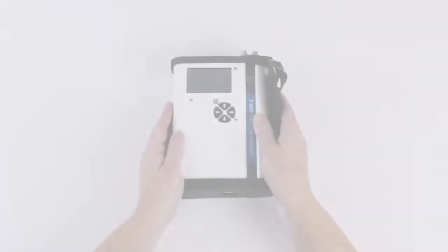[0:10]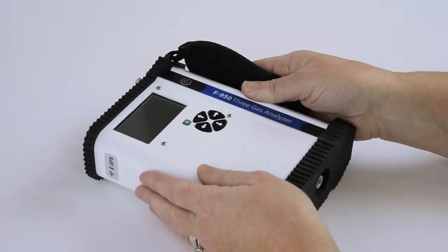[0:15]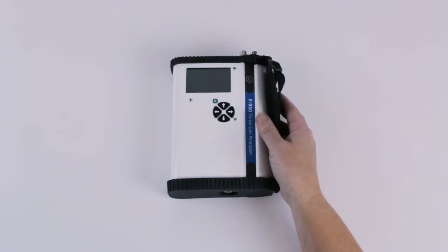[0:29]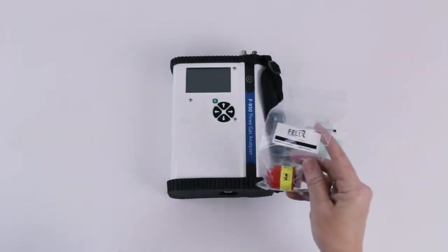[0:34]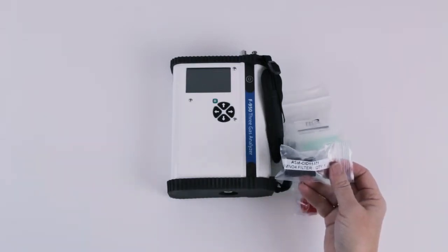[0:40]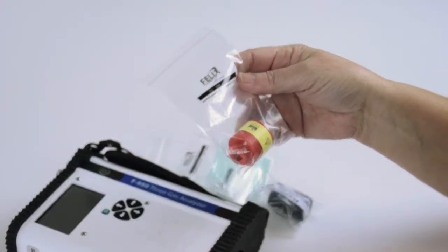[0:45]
The following is an instructional video for using the DIY Do-It-Yourself Annual Maintenance Kit for the F-920 Check It, the F-940 Store It, the F-950 3-gas analyzer, and the F-960 Ripen It. The kit will include a calibrated ethylene sensor, a calibrated oxygen sensor, and a KMnO4 filter. For the F-920 Check It, it will only include a calibrated oxygen sensor.
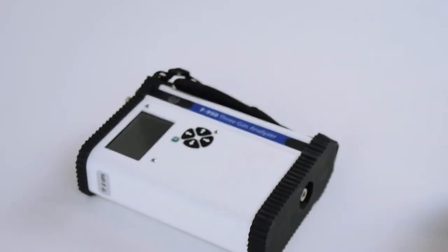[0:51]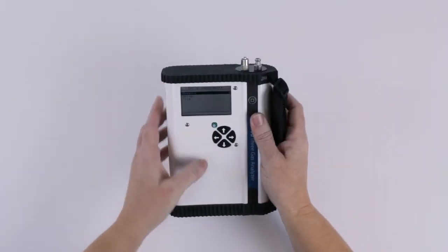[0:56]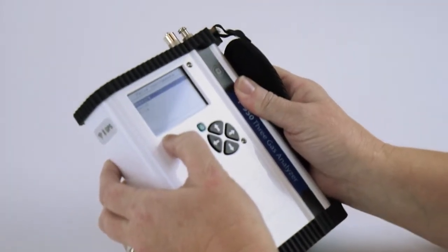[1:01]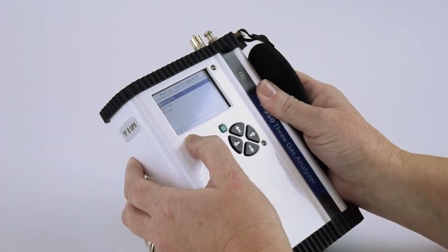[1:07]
To begin, power on the instrument and determine the firmware version. This is visible in the lower left-hand corner of your screen. To use the DIY kit, you need a firmware version of 1.9.6.3 or higher. If you do not have a firmware version that is 1.9.6.3 or higher, follow the instructions in your manual to update your firmware before you begin this process.
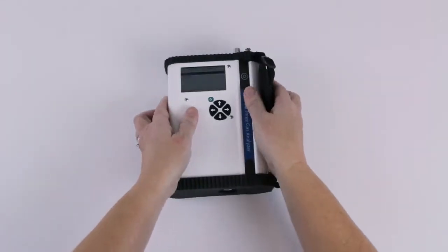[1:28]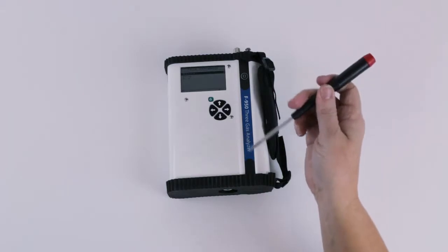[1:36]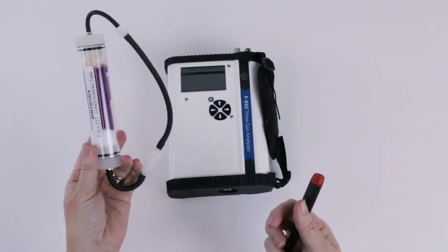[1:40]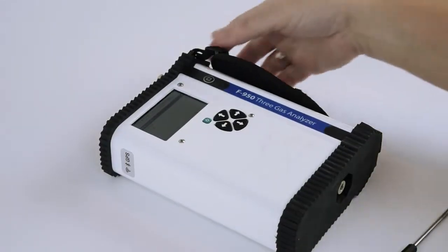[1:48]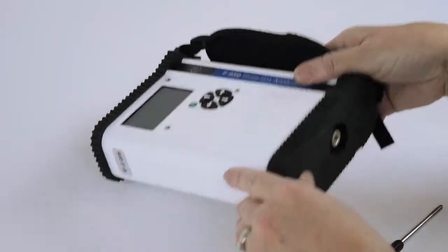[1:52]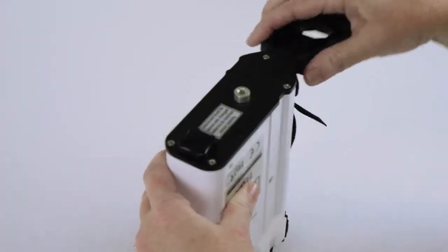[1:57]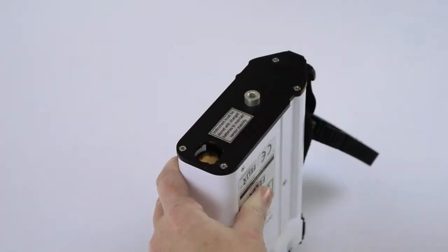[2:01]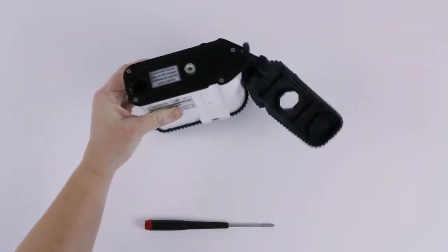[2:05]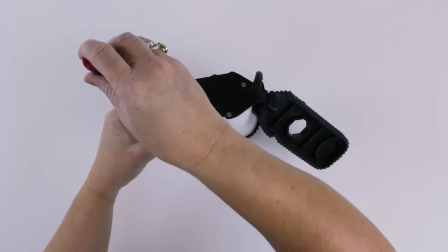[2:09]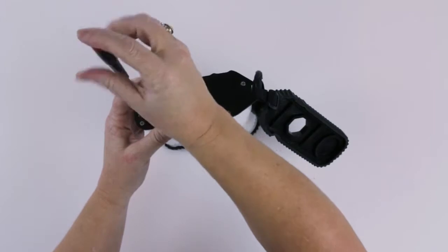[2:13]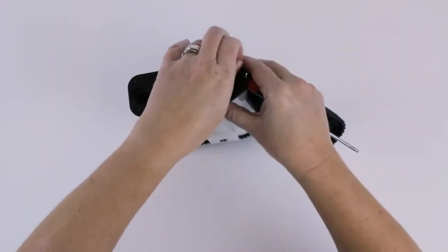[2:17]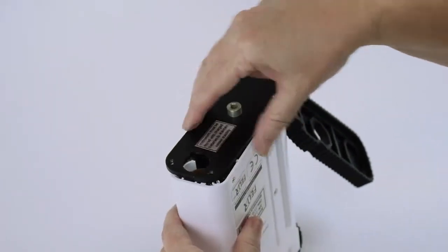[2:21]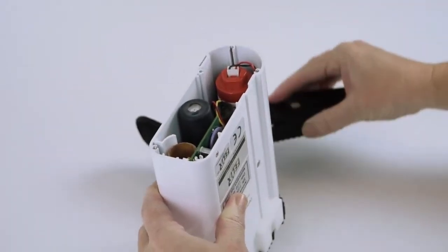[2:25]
All you will need for the installation of the maintenance kit is a Phillips head screwdriver and the external conditioning tube filled with potassium permanganate that came with your accessories when you first purchased the instrument. Turn off the instrument. Remove the rubber bottom cover. Remove the battery cap and the batteries. Use your screwdriver to remove the 4 screws securing the bottom plate. Remove the bottom plate. It's okay to keep it connected to the hand strap.
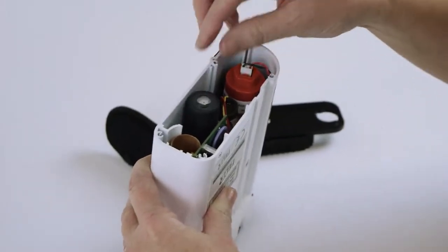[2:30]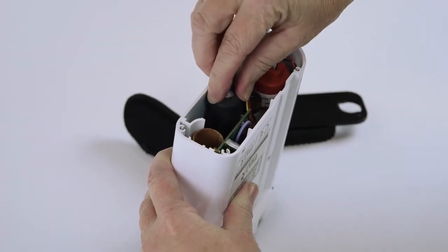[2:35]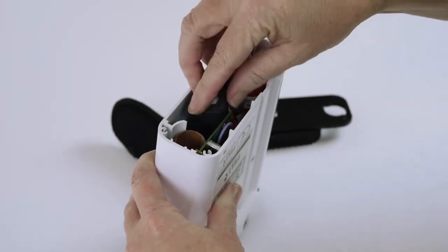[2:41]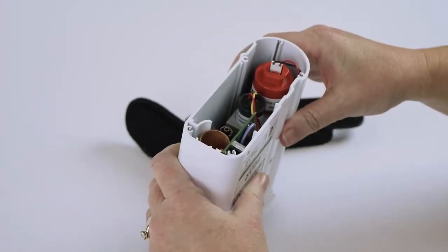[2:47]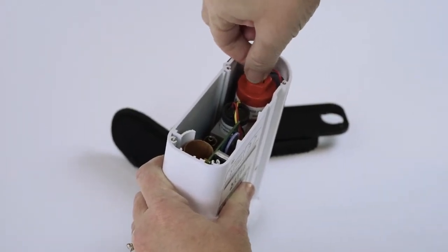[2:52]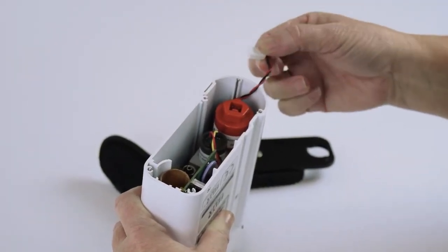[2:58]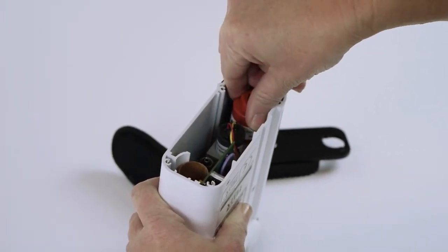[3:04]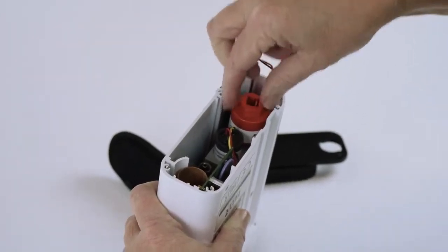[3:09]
The first operation is to remove the KMnO4 filter. An F-920 will not include this piece. Turn the filter counterclockwise and set it aside. The next step is to remove the oxygen sensor. Use the white bracket to disengage the cable and lift it out. Do not use the cables to pull the bracket out. With your fingers, turn the sensor counterclockwise to unscrew from the instrument.
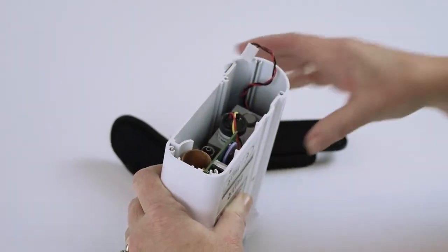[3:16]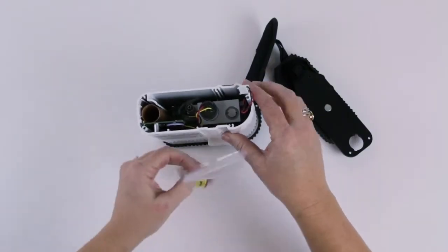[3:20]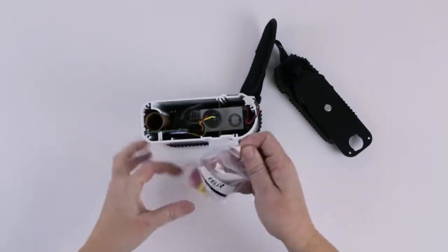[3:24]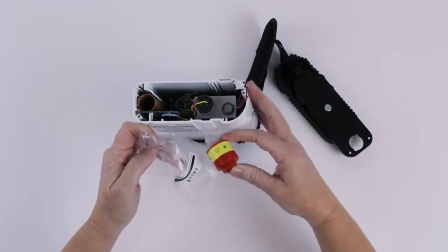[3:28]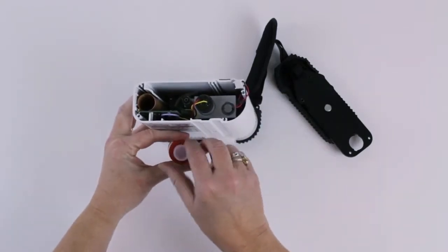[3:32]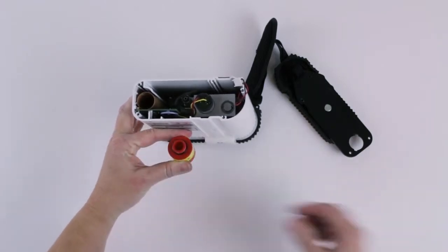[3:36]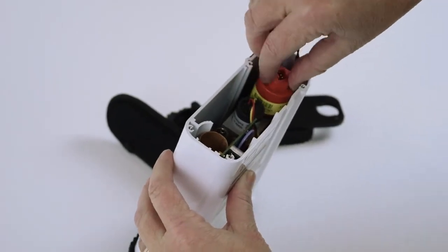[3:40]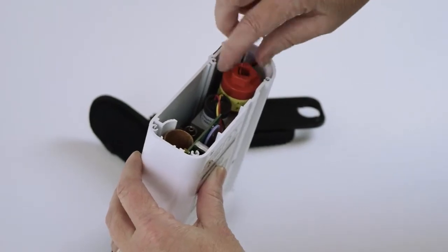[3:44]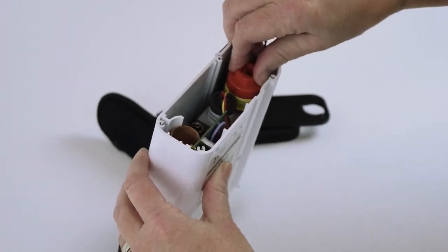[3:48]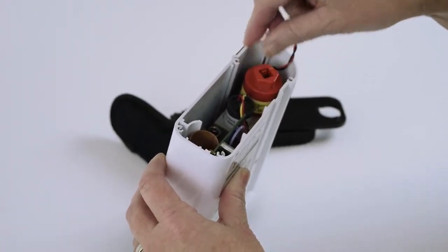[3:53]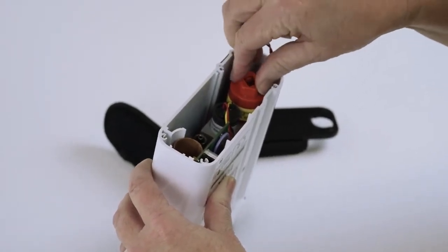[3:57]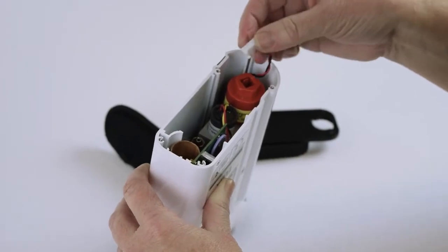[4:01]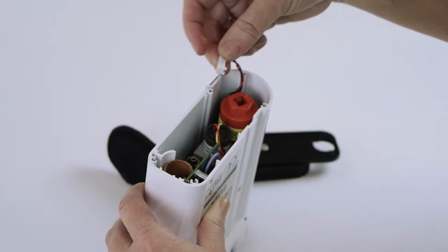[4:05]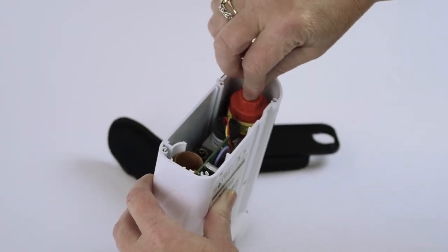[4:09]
Take your new sensor out of the bag. Unscrew the plastic cap and discard. And now screw your new sensor back into the device. It's approximately 4 full turns. You want to make sure that it's tight, but do not over tighten it, and do not use any tools to tighten it. Just tighten it with your fingers. Reapply the cables and push them in place.
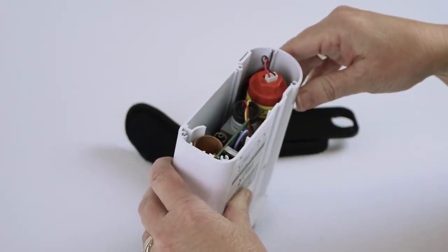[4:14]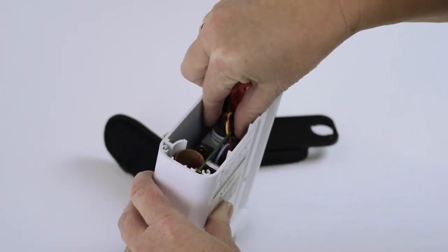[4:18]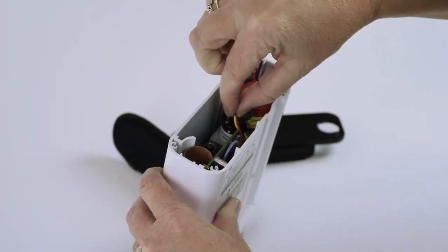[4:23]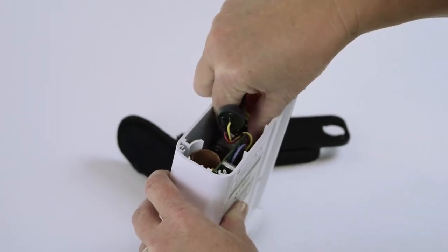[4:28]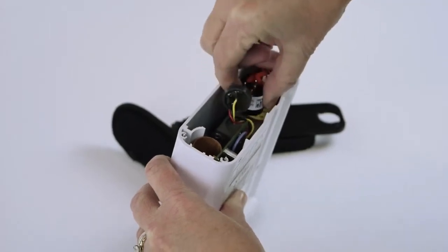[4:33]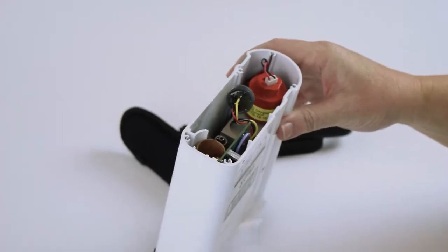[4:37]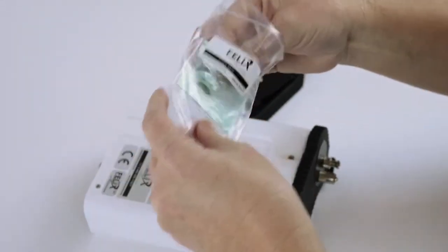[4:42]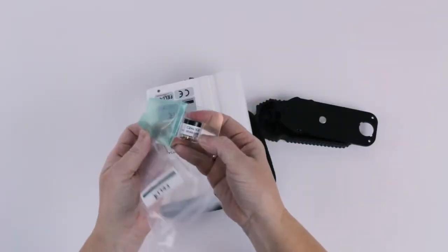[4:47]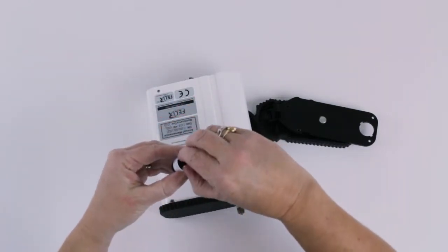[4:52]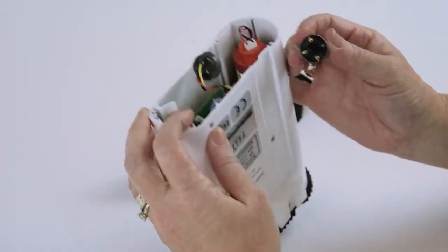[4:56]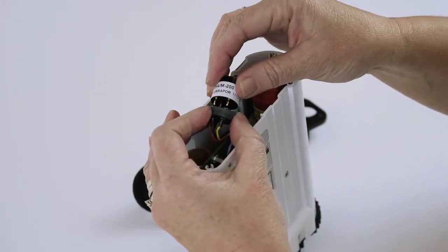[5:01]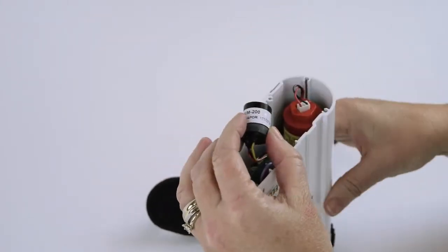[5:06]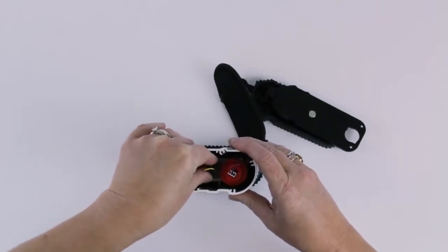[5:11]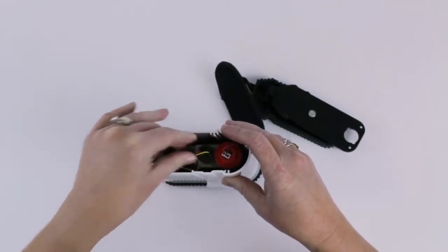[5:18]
Now to replace the ethylene sensor. With your fingers, remove the cable cap. Again, do not use the cables themselves to remove the cap. Now just lift the sensor out of the instrument and set it aside. Take your new sensor out of the packaging and remove the wire clip. Attach the sensor to the cap, aligning the 3-prong connectors to the cap, and press it firmly in place. Press the sensor back into its slot in the instrument. Use 2 fingers to firmly seat the ethylene sensor in its slot.
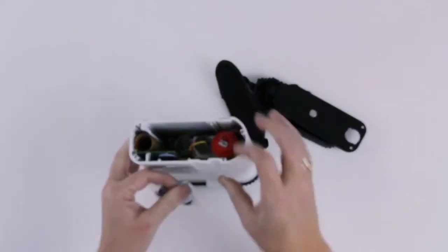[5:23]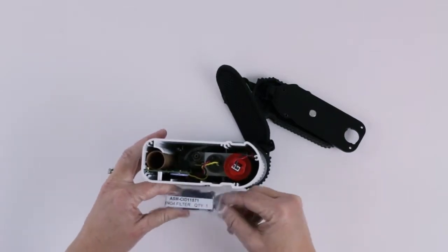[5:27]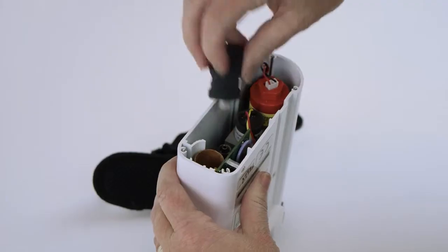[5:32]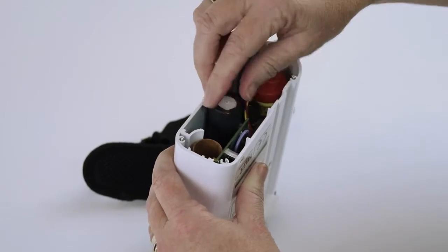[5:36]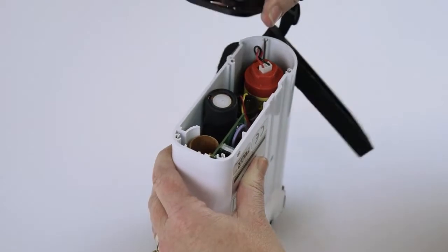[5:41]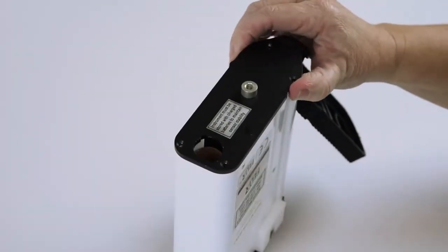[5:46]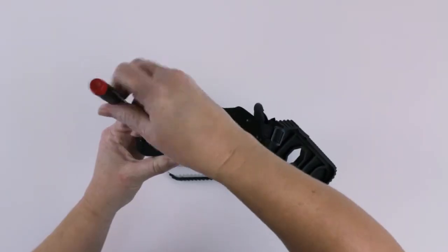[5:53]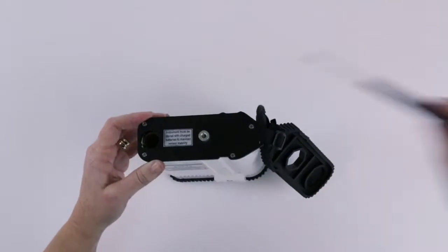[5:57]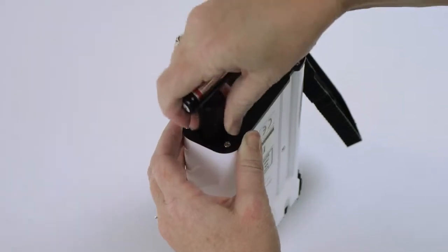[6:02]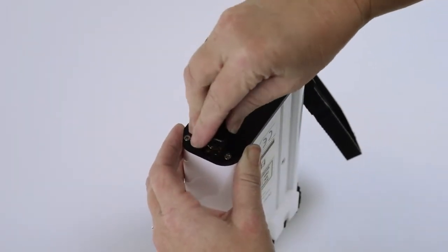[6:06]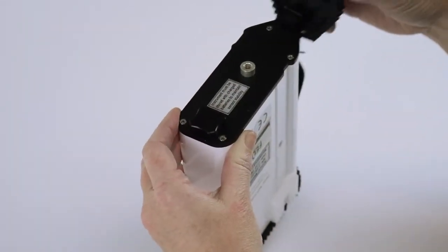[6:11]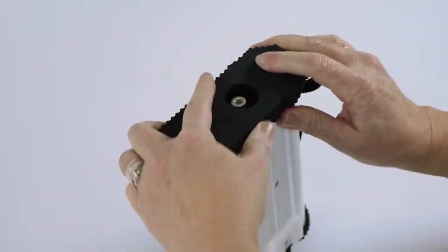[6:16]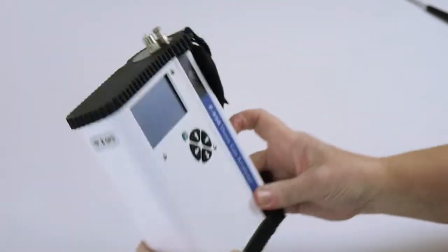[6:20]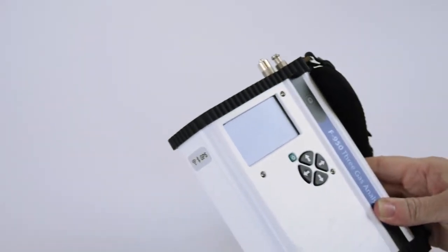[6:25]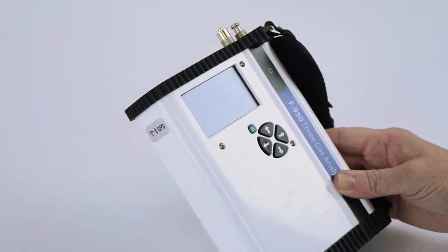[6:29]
Open your new KMnO4 filter and install the filter by screwing it in clockwise. Now, reattach the bottom plate to the instrument with the 4 screws. Once you have the plate in place, install your batteries, positive side down, and replace the battery cap. Put the rubber bottom plate back in place. And now you're ready to power on the instrument and set the gain values for your new sensors.
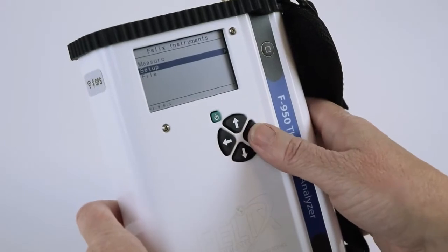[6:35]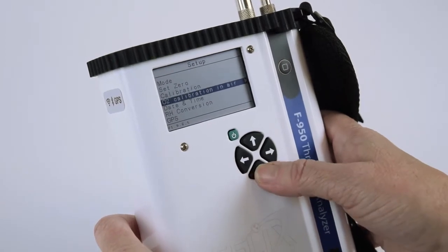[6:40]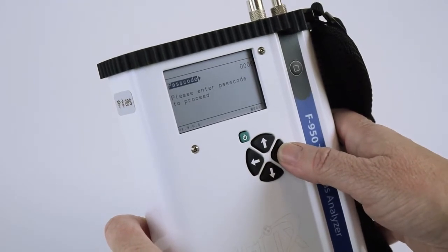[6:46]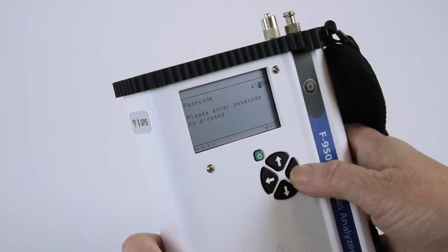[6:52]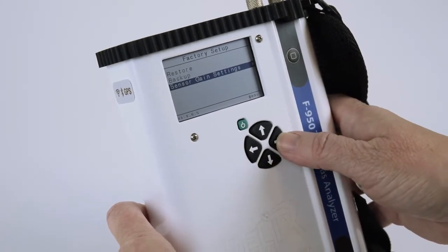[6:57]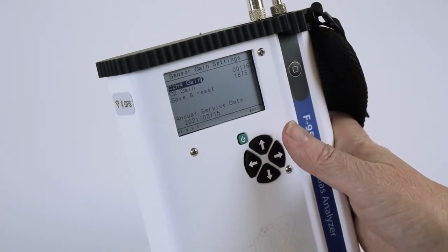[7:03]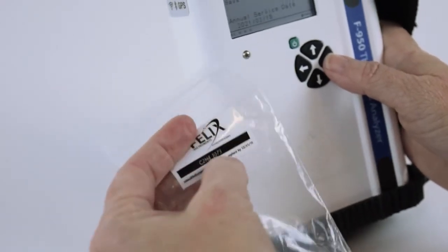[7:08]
Power on the instrument, select Setup, press the right arrow, down to Factory Setup. Arrow right again at passcode and enter the passcode 1111. Arrow down to sensor gain settings and enter the sensor gain number from the packaging. In this case, the C2H4 sensor gain number is 1073.
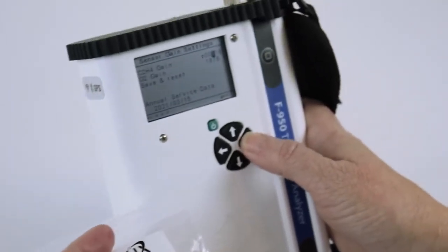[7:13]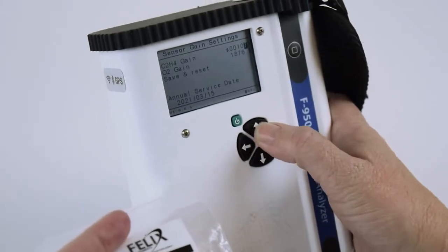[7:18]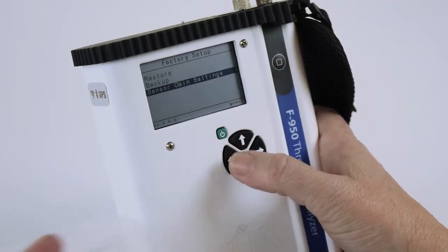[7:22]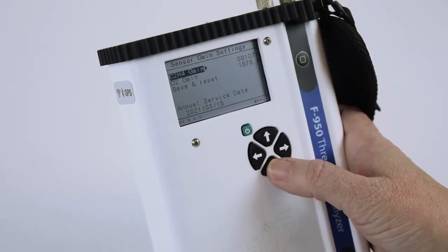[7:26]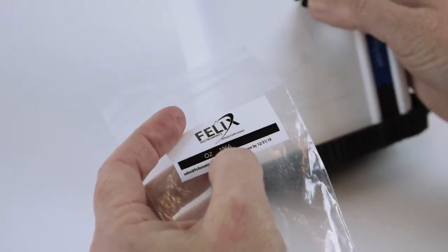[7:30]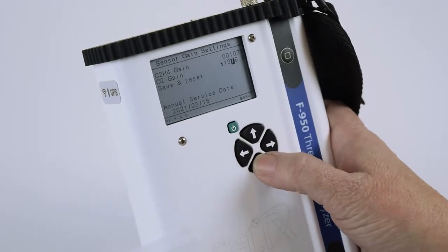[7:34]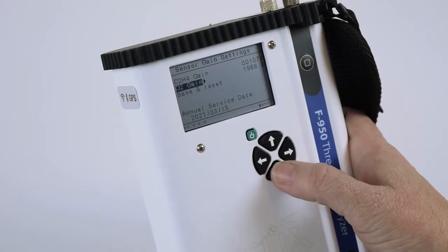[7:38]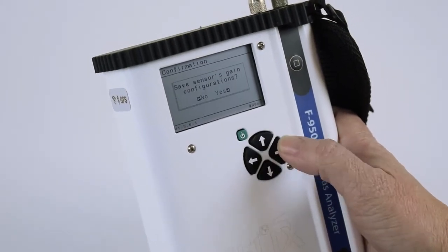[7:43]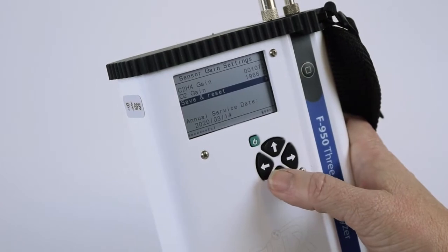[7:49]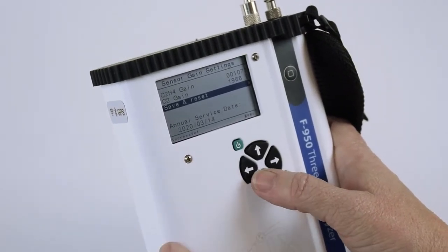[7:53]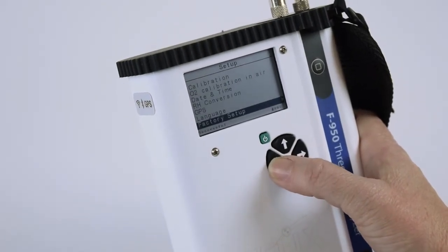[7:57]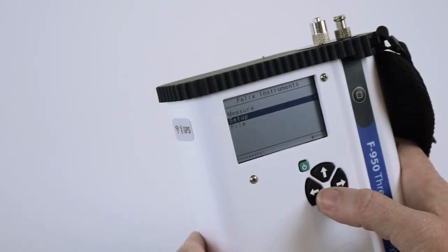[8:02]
Arrow over, and change this to 1073. Arrow back. And now I'm going to enter the O2 gain number, which in this case is 1966. Once you have entered your values, arrow down to save and reset. Once yes, answer yes, and it will automatically set the annual service date to 1 year from today. Arrow back to the main menu, where you're going to perform a leak test.
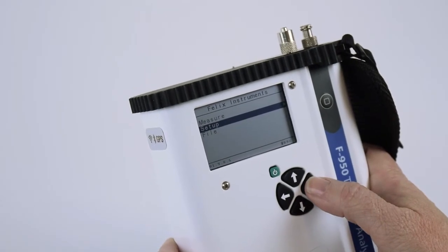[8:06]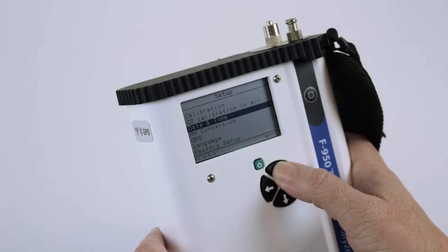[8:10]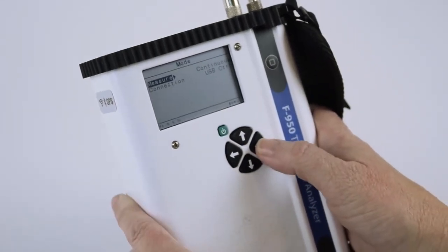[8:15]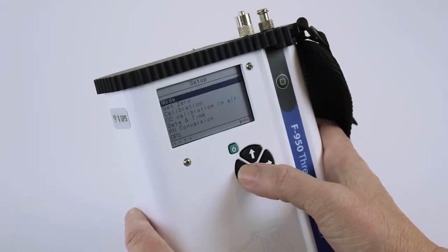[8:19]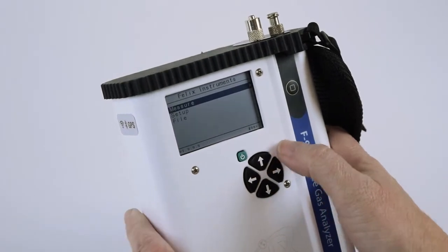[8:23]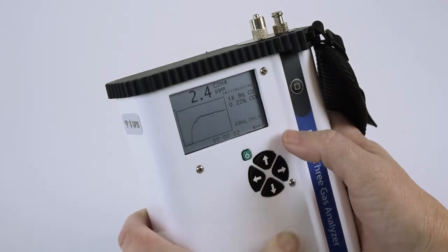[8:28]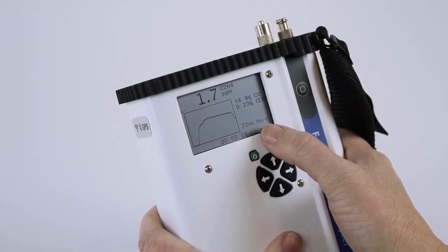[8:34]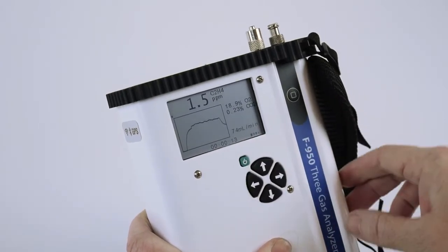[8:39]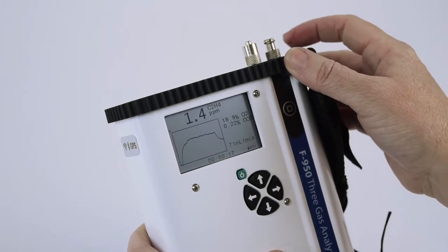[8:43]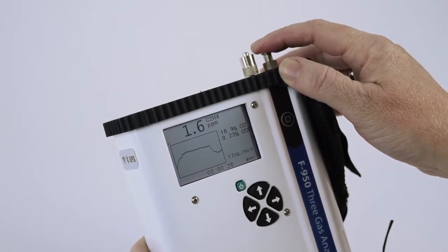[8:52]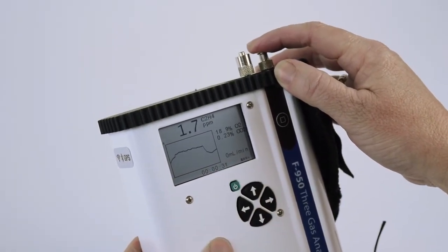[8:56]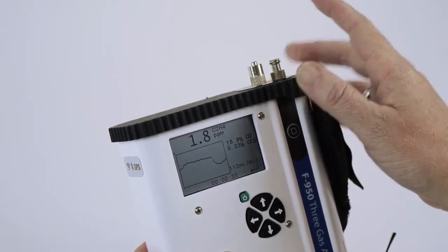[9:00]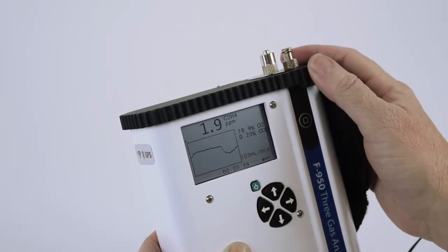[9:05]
Once again, from the Setup menu, arrow right, arrow up to Mode, and make certain that you are in continuous mode. Arrow back right to the main menu, arrow to Measure, and press the Start button to begin measurements. Wait a few seconds to allow the pump to stabilize. When it stabilizes at around 70 milliliters per minute, you're going to place your finger over the inlet port and watch to see the flow meter drop to 0. Once it reaches 0 or close to 0, release your finger and the flow rate should come back up and stabilize to 70 milliliters. If this happens correctly, you can pass on to leak test part B.
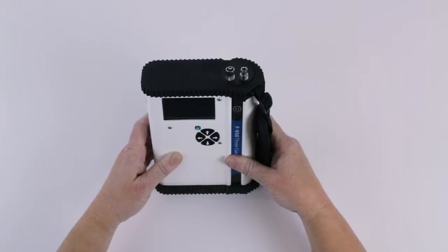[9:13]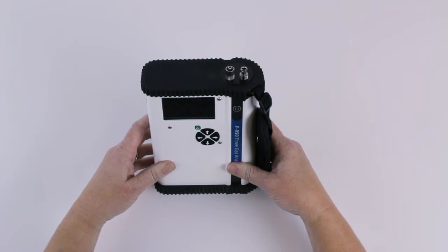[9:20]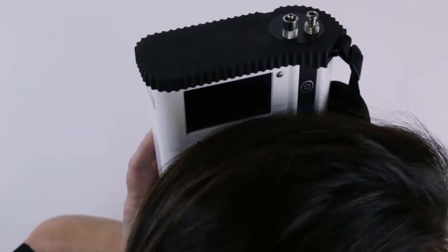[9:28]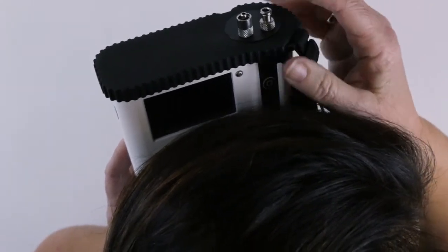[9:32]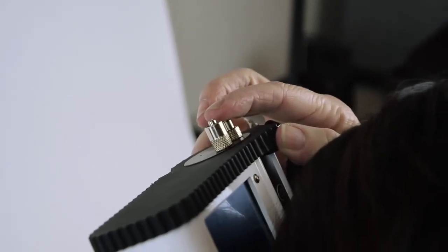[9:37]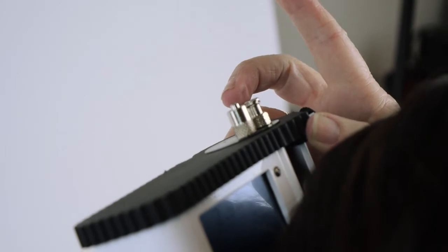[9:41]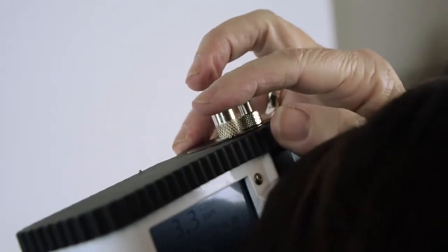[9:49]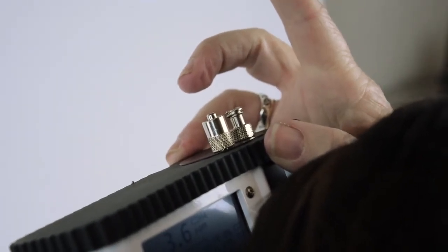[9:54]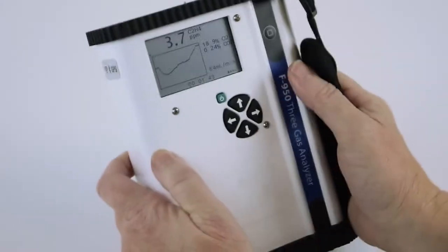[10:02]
For leak test part B, you're going to use the sound of the internal pump to check for leaks. Simply put the instrument next to your ear, right next to the Felix logo, and listen for the sound of the pump. You'll hear the pump running. With your finger, cover the inlet port, and you'll hear the pump clicking. When you hear the clicking sound, release your finger, and you'll hear the pump running continuously again. With your finger, cover the outlet port, and you'll hear the pump stuttering. When you hear the pump stuttering, release your finger, and the pump should return to continuous mode. If you hear those sounds correctly, you've passed leak test part B.
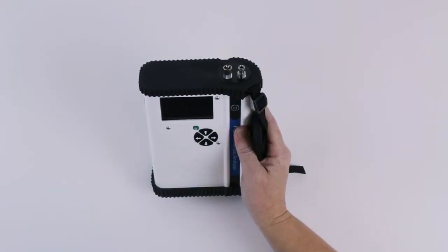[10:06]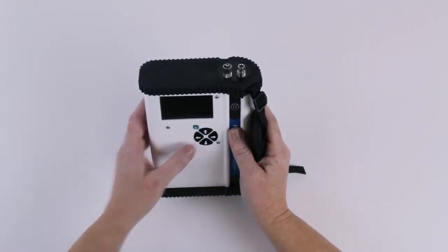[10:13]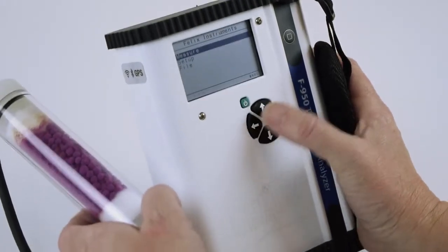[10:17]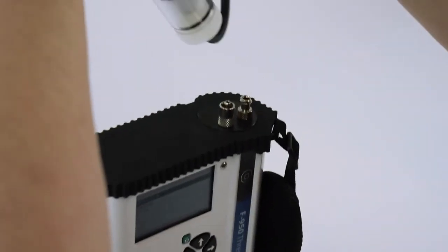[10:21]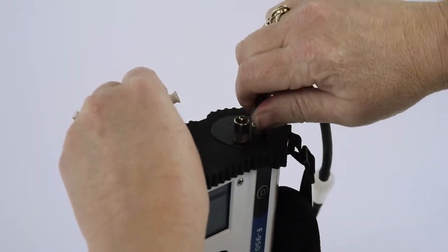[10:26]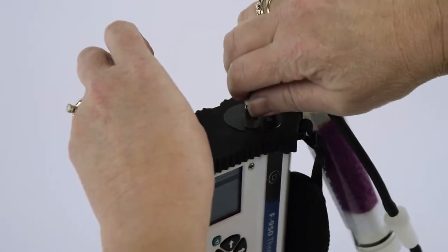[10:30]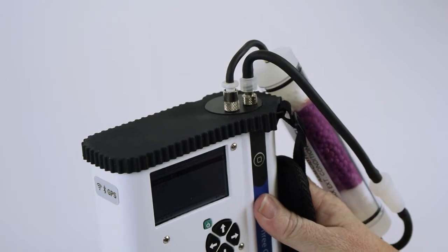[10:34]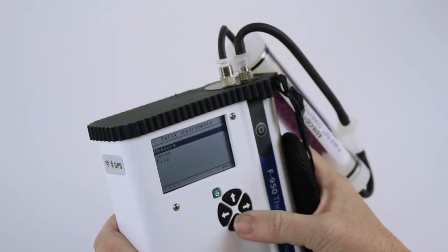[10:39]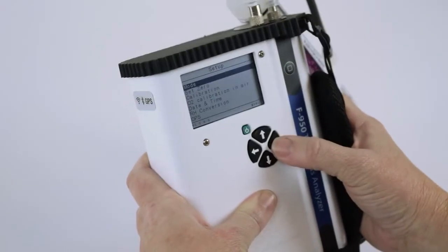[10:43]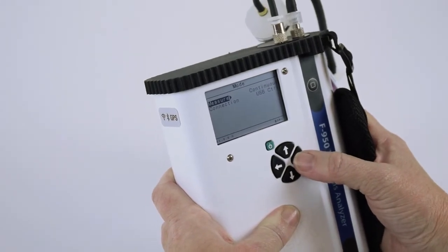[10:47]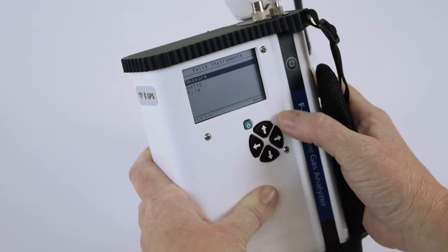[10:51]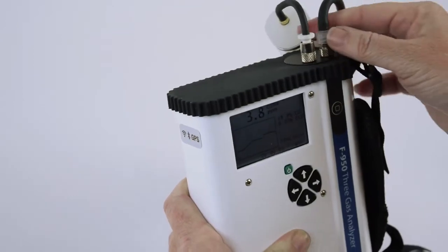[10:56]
The next operation is to clean the system with the external conditioning tube. Arrow back to the main menu and attach the external conditioning tube to the inlet and outlet ports. From the main menu, go to Setup, arrow right to Mode, and make sure that you're in continuous mode. Arrow back to the main menu, go to Measure, and start a measurement. Allow the instrument to run for 30 minutes to clean the instrument.